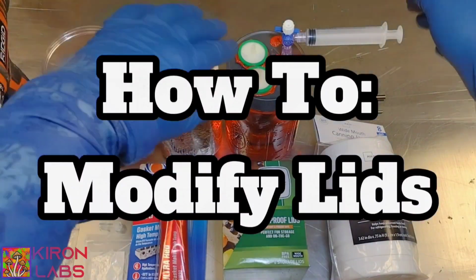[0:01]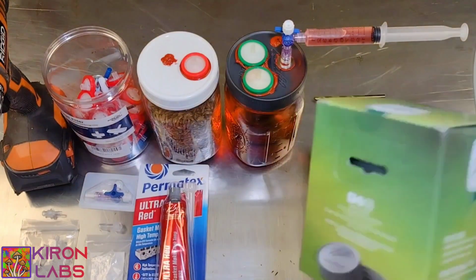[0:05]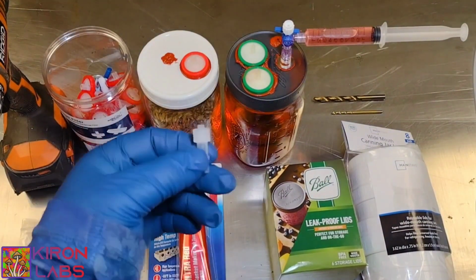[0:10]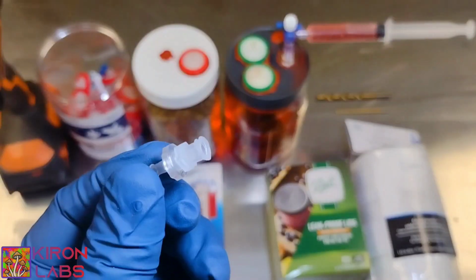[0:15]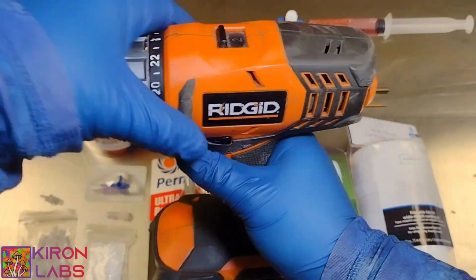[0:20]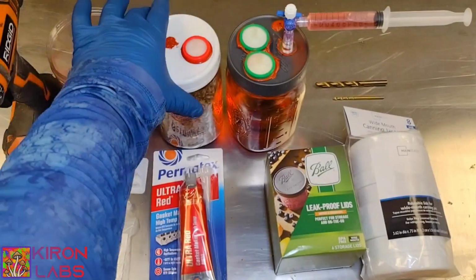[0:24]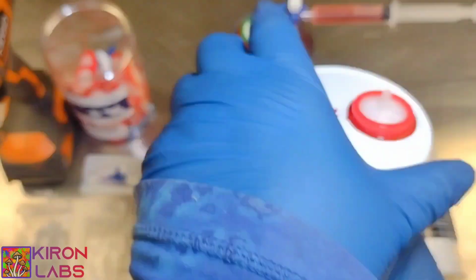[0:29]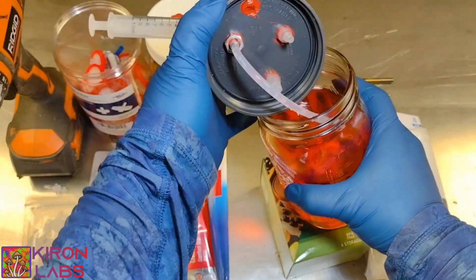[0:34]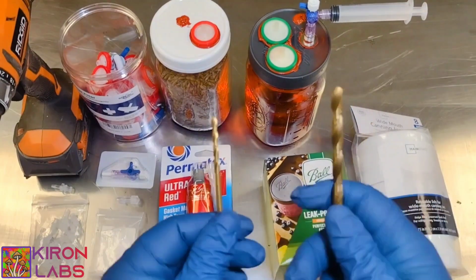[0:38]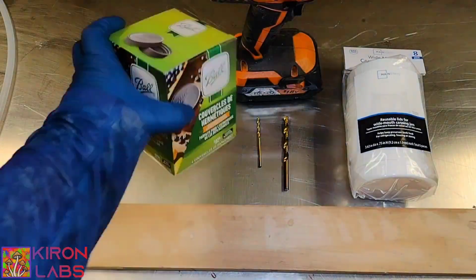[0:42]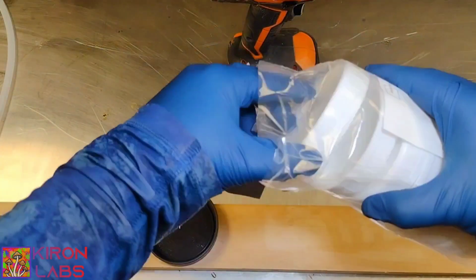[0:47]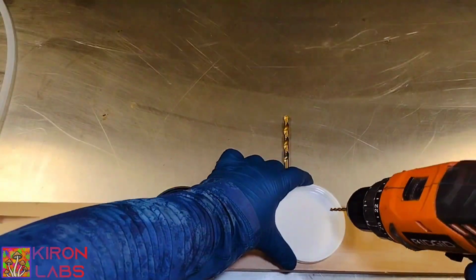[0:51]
We will be using a 1/8 drill bit as well as a 9/32 drill bit. So first we're going to start off by opening up our lids. Next we're going to drill our 1/8 hole, and this will become our injection port.
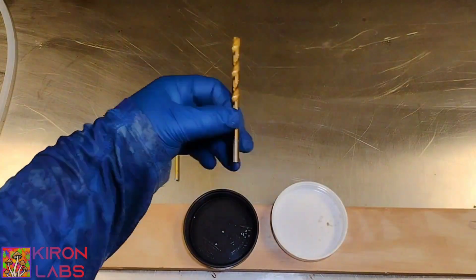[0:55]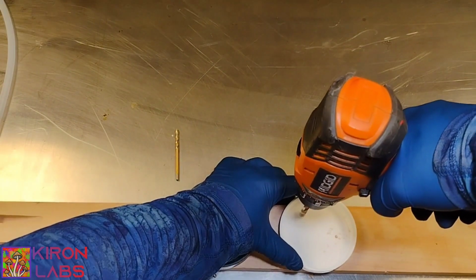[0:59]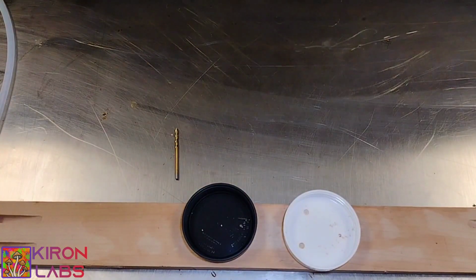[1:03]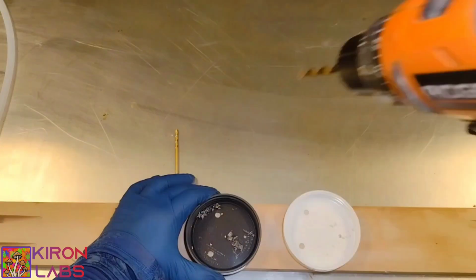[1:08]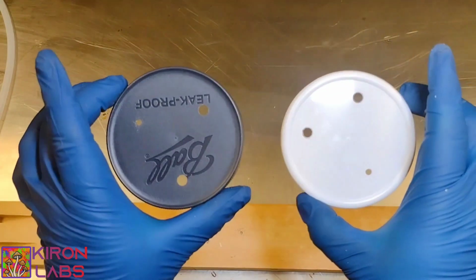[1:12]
Next, we'll use our 9/32 drill bit, and we're going to drill two holes, and we're kind of making a triangle formation on the back of our lids. Now, the reason why we are drilling on the back side is it is less likely to crack on us while we're drilling it.
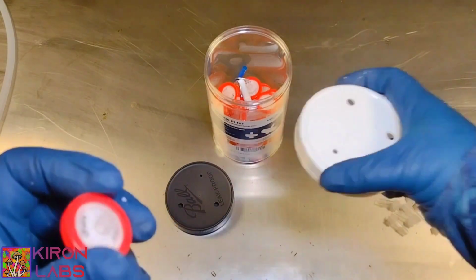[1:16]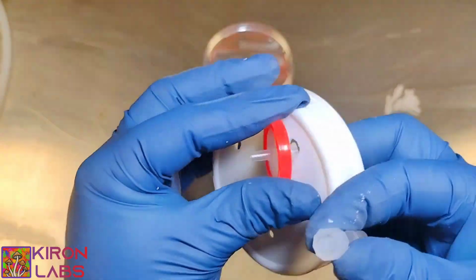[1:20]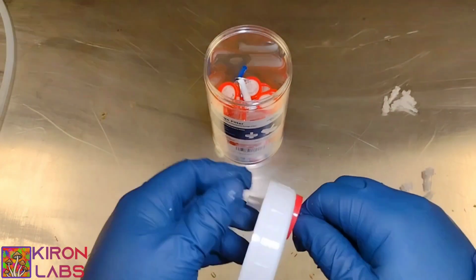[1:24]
Let's go ahead and grab our syringe filters. This will be used as our gas exchange. Here is us dry fitting all of our parts together. So this is what it's going to look like when you do it.
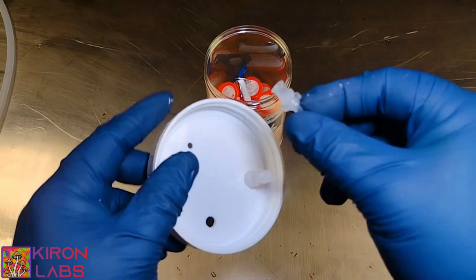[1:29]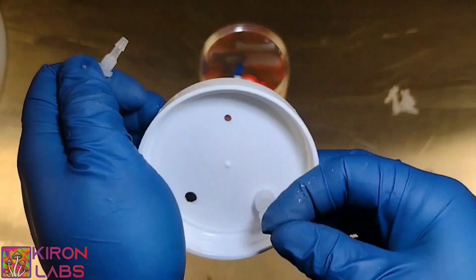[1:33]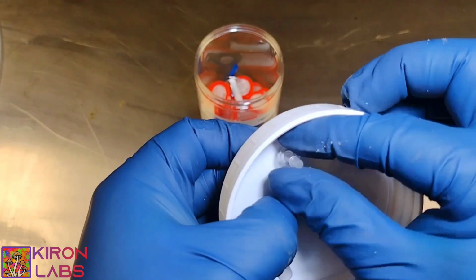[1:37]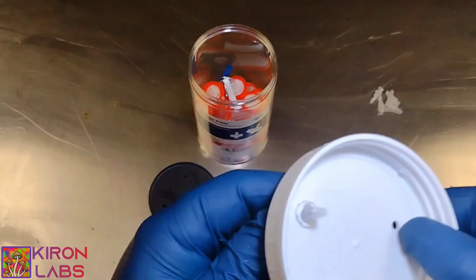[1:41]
So next we have our female Luer lock with a barb at the end, and then we will connect a silicone tubing that we'll use to draw out our liquid culture.
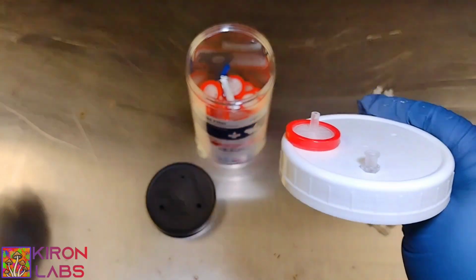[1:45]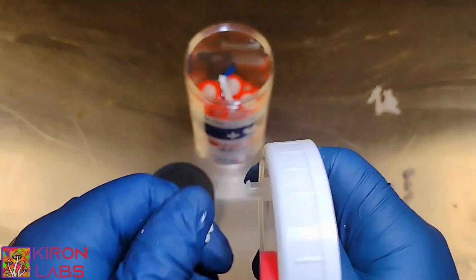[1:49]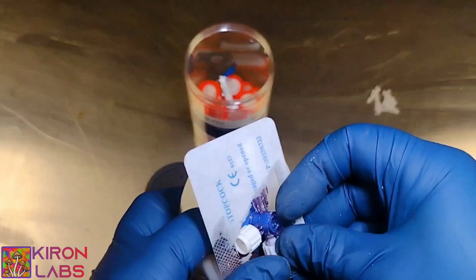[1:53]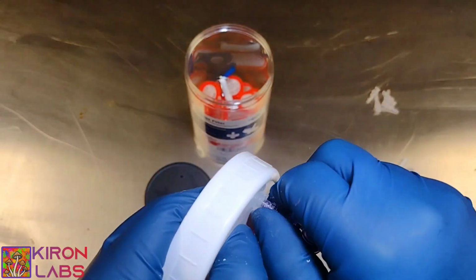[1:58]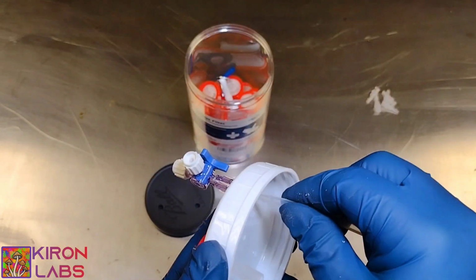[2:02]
Before you pressure cook, it's important to use a polypropylene fitting and to have that on and sealed before it goes into your pressure cooker. After you're done pressure cooking and you're in a sterile environment, you can go ahead and put your switch connector on there.
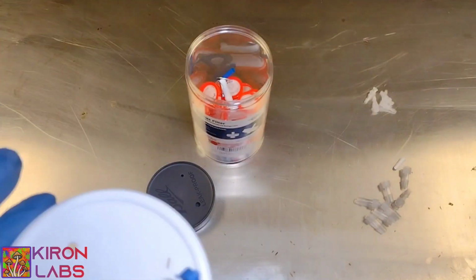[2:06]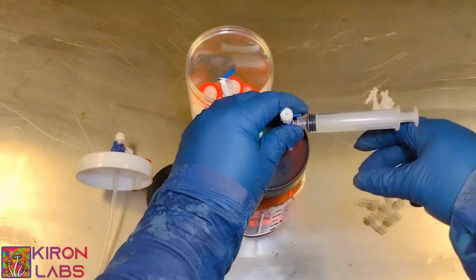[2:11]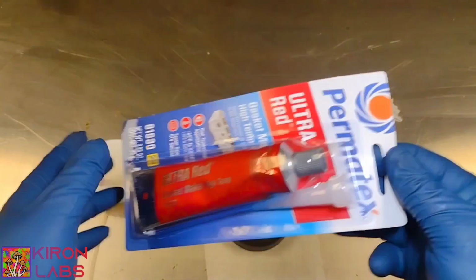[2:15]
Here is us dry fitting the hose. And now I'm going to put them side by side so you can see what you've done versus how it functions. We're going to go ahead and grab our high-temp gasket sealer, and we're going to put it on for real.
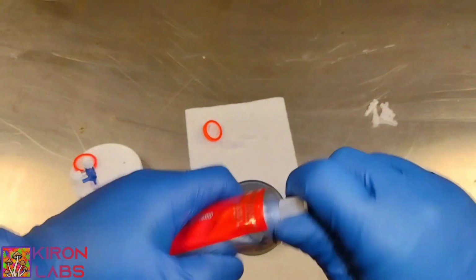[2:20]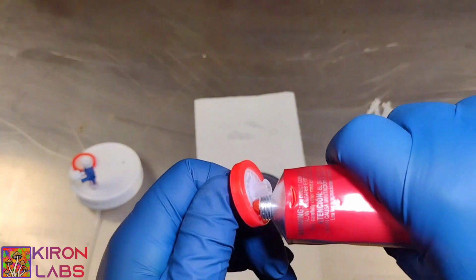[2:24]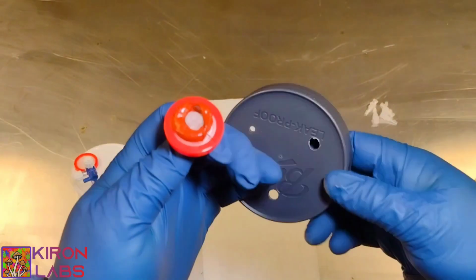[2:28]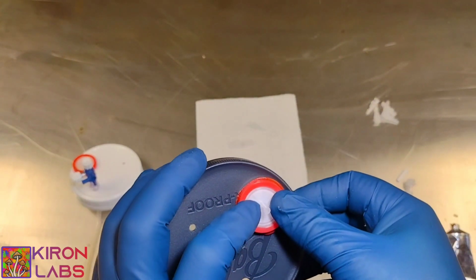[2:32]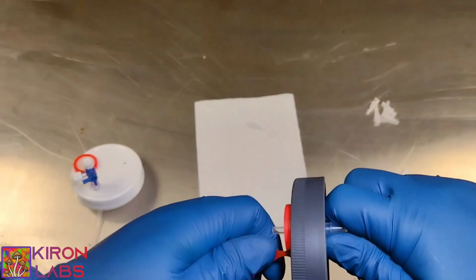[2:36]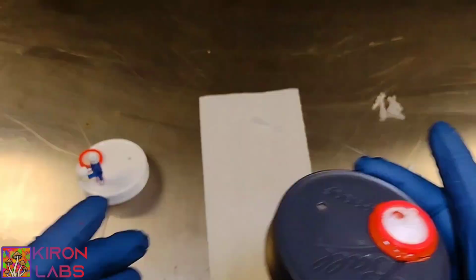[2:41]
So first we start by opening up the seal. Now we're going to put a nice ring of sealant right around our disc filter. We're going to put the Luer end down. Got to kind of push it in, make sure it's on there nice and snug. There's no air gaps. And now we'll twist on our male Luer lock. That's what it looks like.
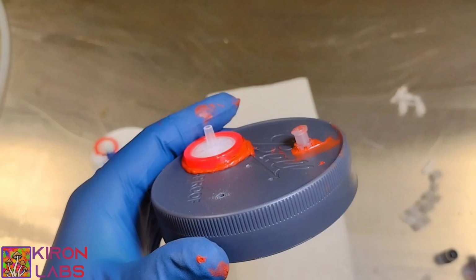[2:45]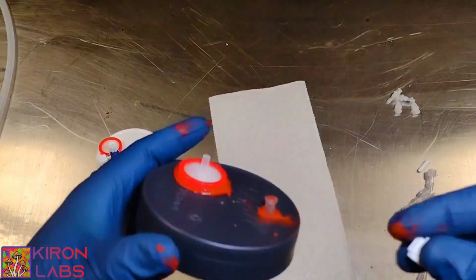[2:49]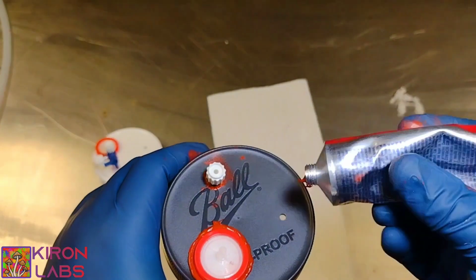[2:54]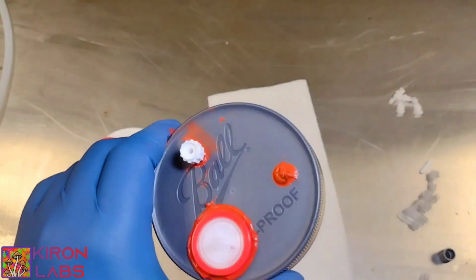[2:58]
Okay, so now I'm going to grab my female Luer with the barb. And then that part is going to be used for collecting our liquid culture. Again, make sure you use polypropylene fittings on this. And for our injection port, we're just going to use some gasket sealer on the top and the bottom.